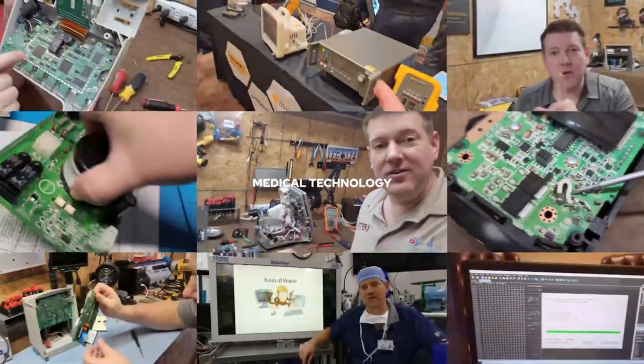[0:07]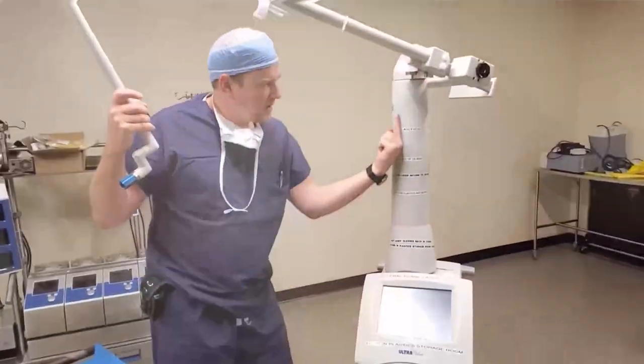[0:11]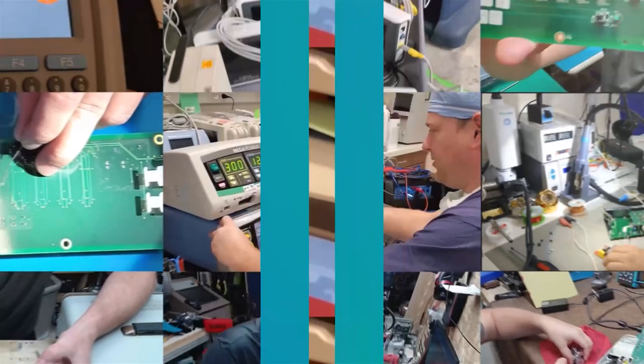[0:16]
If I seem like I'm a little more excited than usual, that's because I'm back in ORs. I'm back in ORs, guys, and you guys should know, I love ORs. I've been doing this for 20 years, 19 of which have been in ORs.
Today, I was brought in because I've got a light that has failed spectacularly, probably due to negligence, but I'm gonna swap out a light head. And you guys are here for the ride, okay? So let's go ahead and flip this around. I'll show you what I'm doing. That way I can document the process and maybe you guys will learn something about lights.
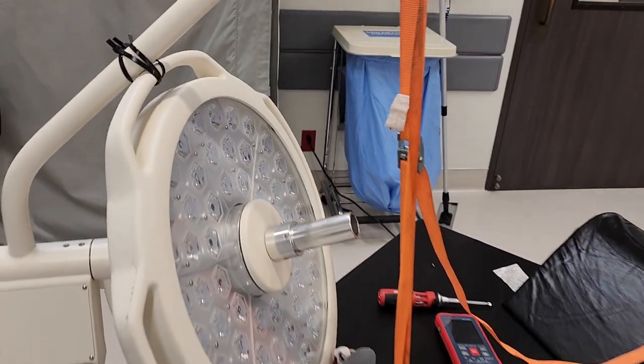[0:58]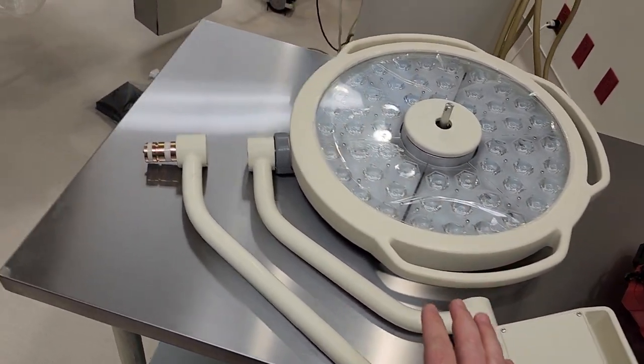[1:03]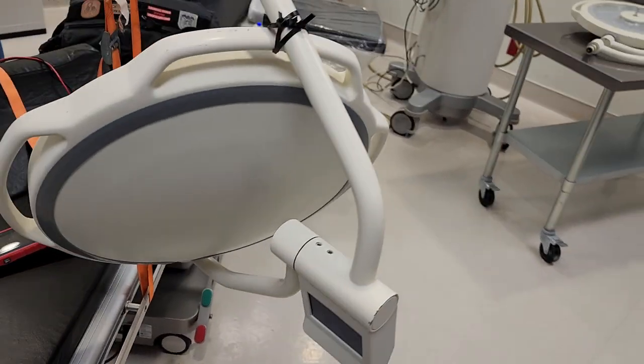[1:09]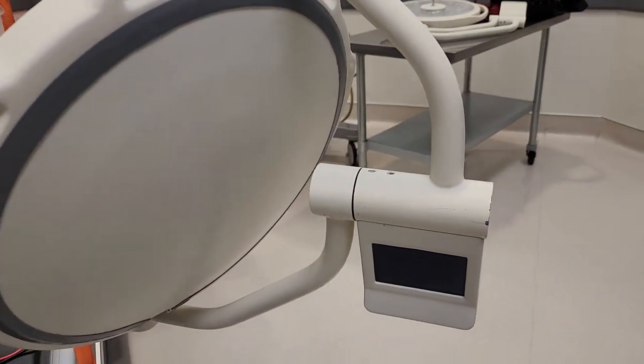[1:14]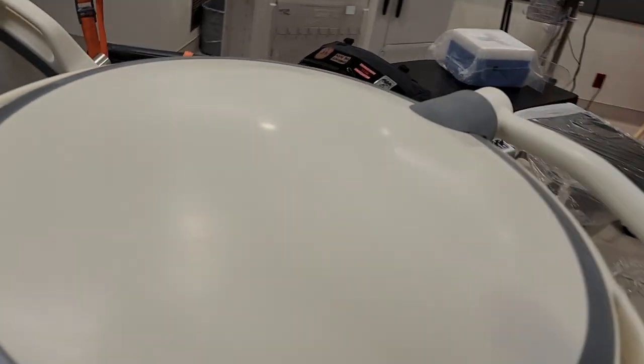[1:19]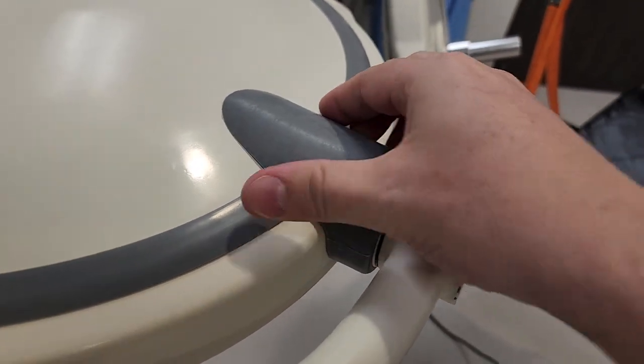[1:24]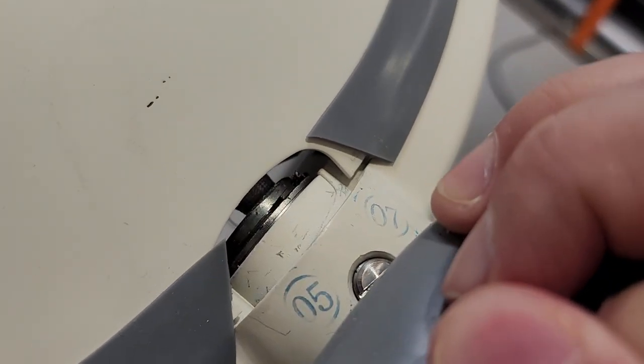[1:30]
All right, guys, here we go. So here is the replacement light head. This is a DRE, let's see, what series is it? The SLS 9000. That's right. Okay. So this is a DRE SLS 9000 and it broke right here at the knuckle. So right here, there's a rubber boot that normally protects it. And on the other light head, it broke right up here in this collar. And you can see on this one, it's absolutely fine.
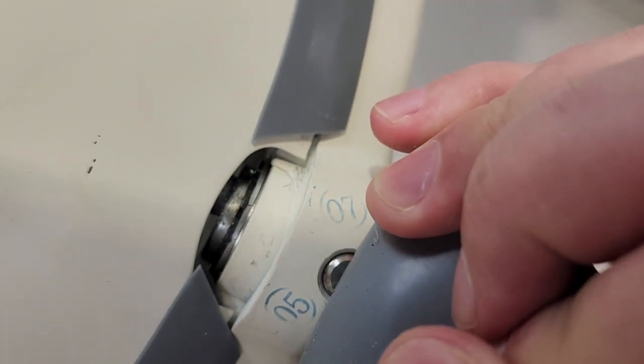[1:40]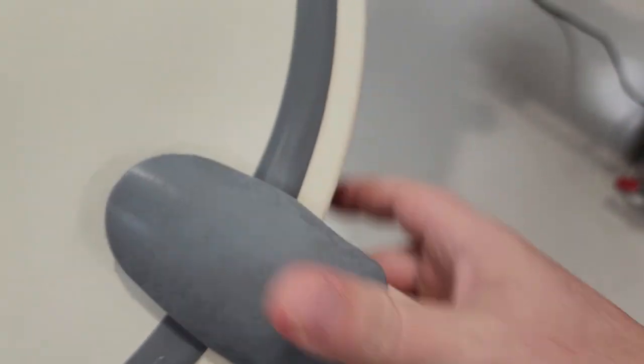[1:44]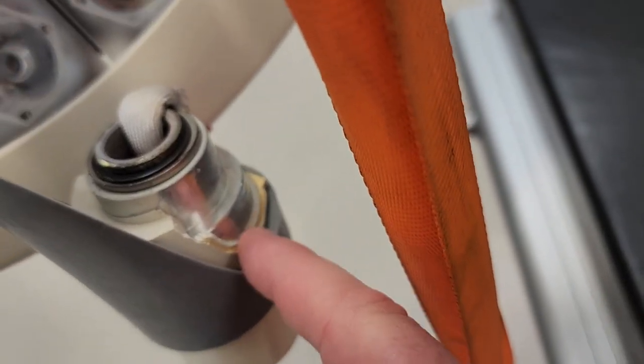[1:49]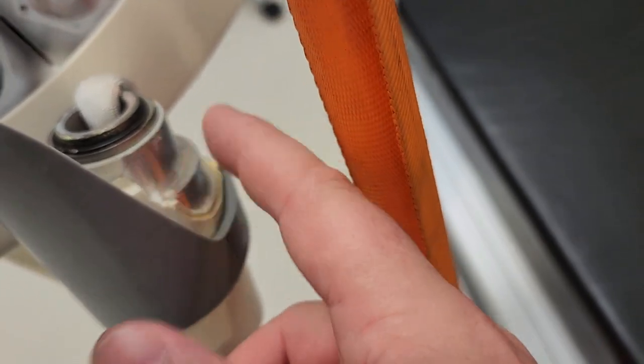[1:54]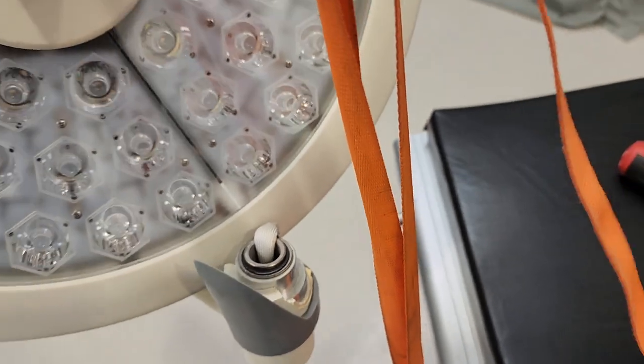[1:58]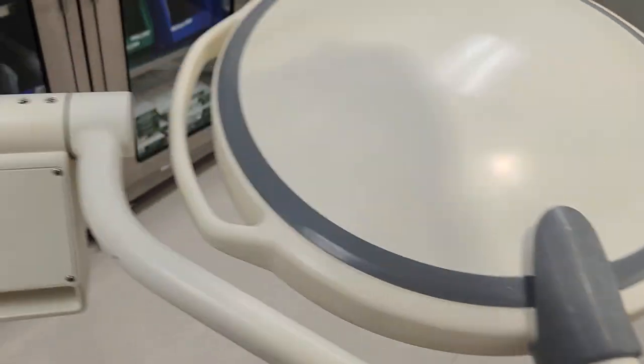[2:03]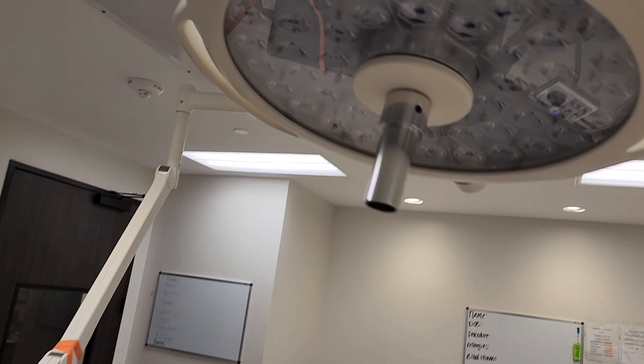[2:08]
Oh, sorry guys. So the other one, it broke right here in the casting. And let's see, it does look like it's multiple layers of polymer. Yeah, so it's got different layers of polymer underneath there. But anyway, you can see that is damaged. This is a two light head room. There you go. So I'm gonna swing one out of the way.
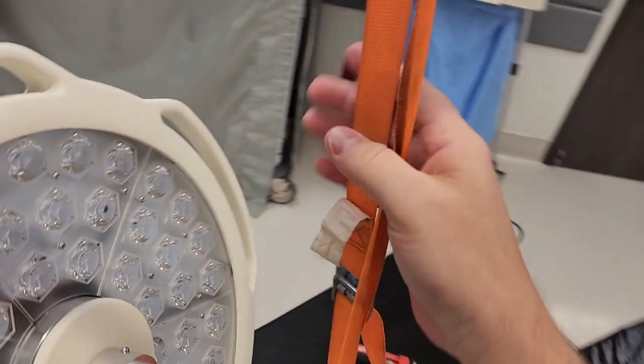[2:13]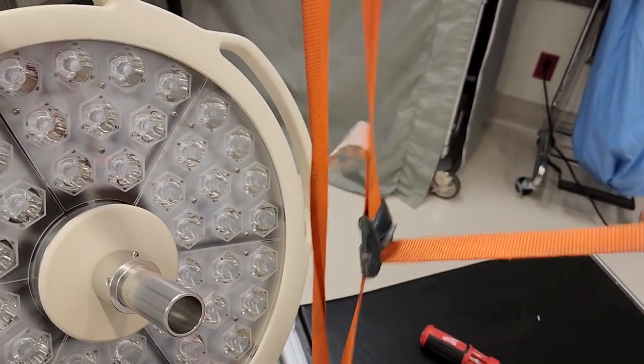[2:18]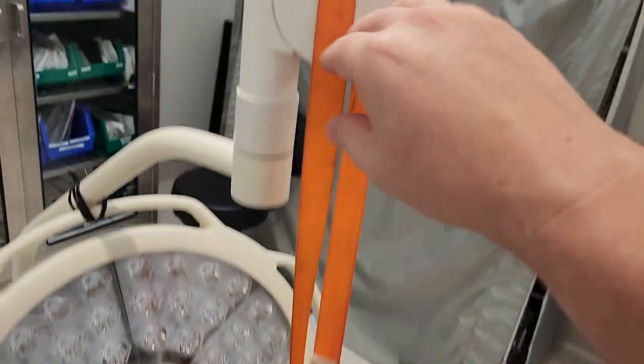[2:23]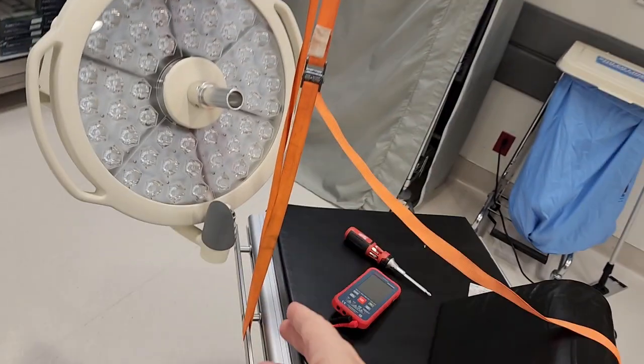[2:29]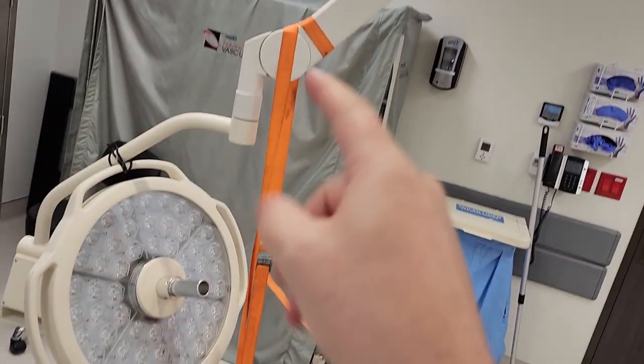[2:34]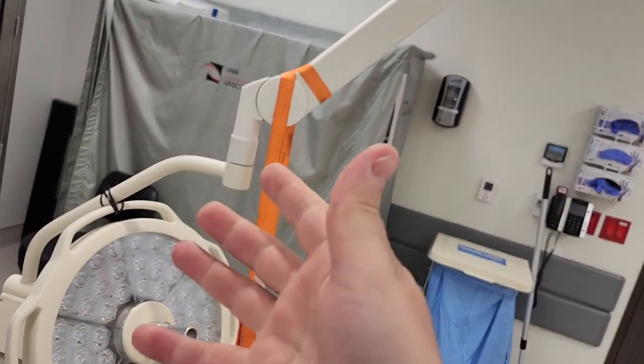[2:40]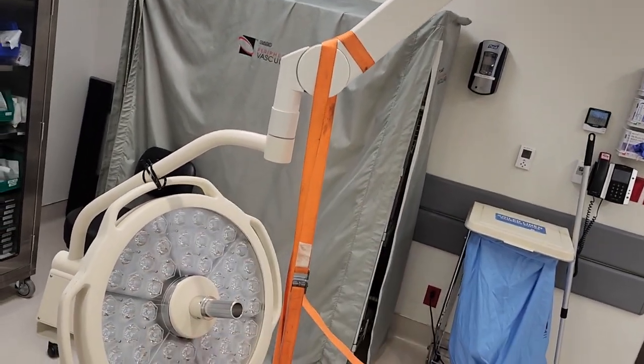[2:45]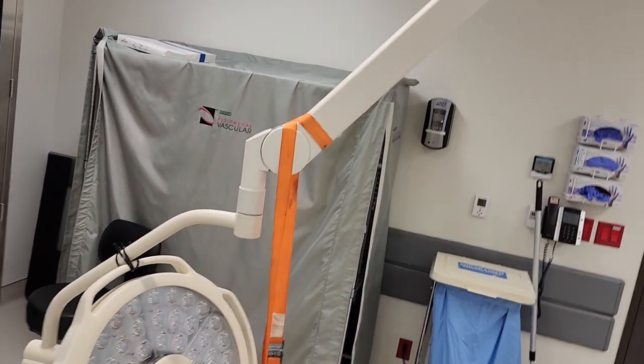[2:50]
So guys, I always keep this orange cable in my tool bag, and this orange cable, this tension tie, is because I use it often on surgical tables, but at the same time, I have almost broke my face because of surgical lights before. So as a precaution, whenever you're working around surgical lights, always tie them down. Even if it's just tightening something down or whatnot, I've had the light head almost fall off before because as you're inspecting it, I've actually found where these junctions are falling apart and I had the arm take off and almost took out my face.
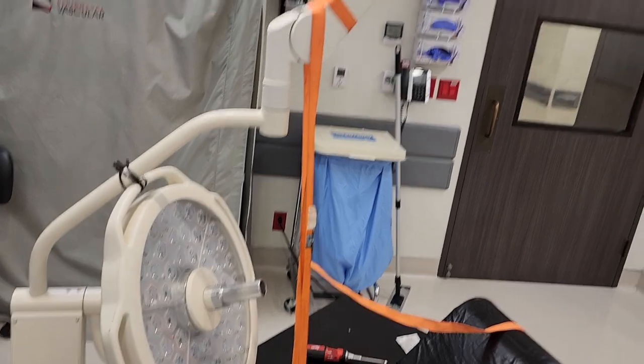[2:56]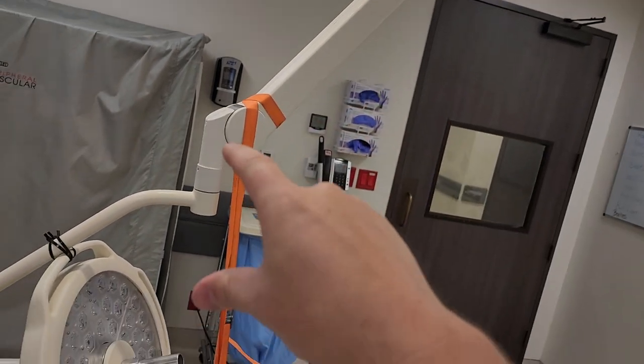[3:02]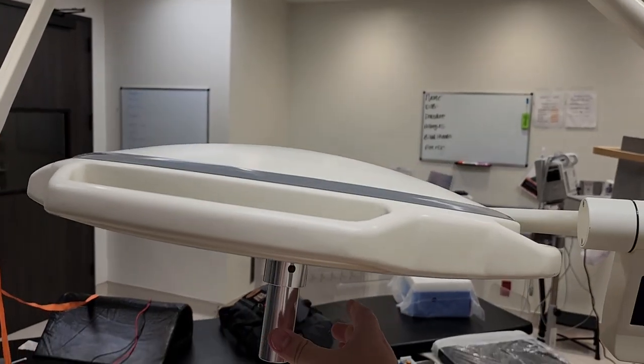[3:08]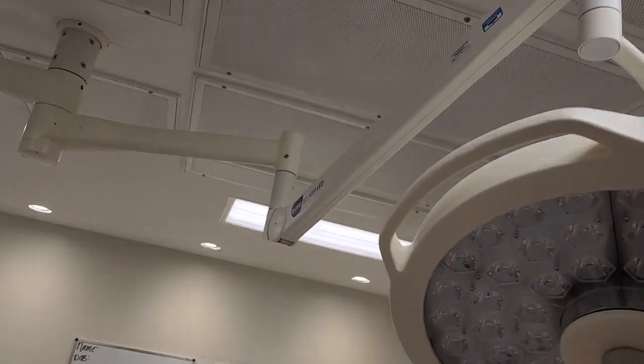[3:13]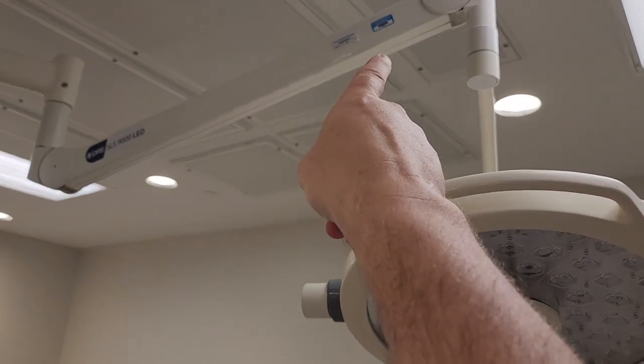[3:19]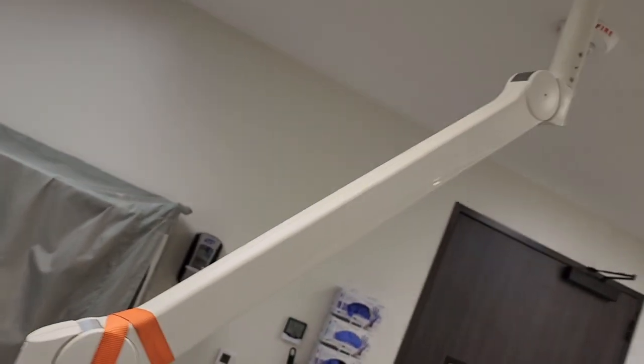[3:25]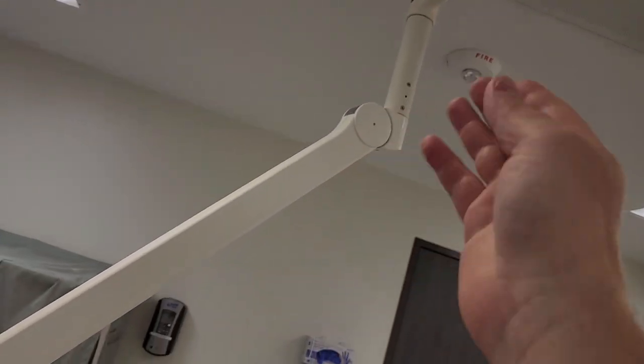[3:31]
So anyway, I have had that before, and it is a spring-loaded arm, which means up in here, there's a tension spring, and it is balanced accordingly, so that when you position a light anywhere in the field, the spring arm is compensating so that it doesn't drift down. And if your light drifts down, then you have to adjust it. There is a way to adjust all these spring arms. And you know, there's only a couple manufacturers of these arms. So I think Ondal is one of the main manufacturers of these arms. So they're all very similar.
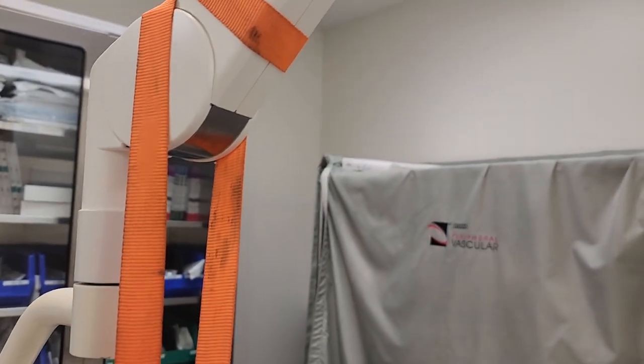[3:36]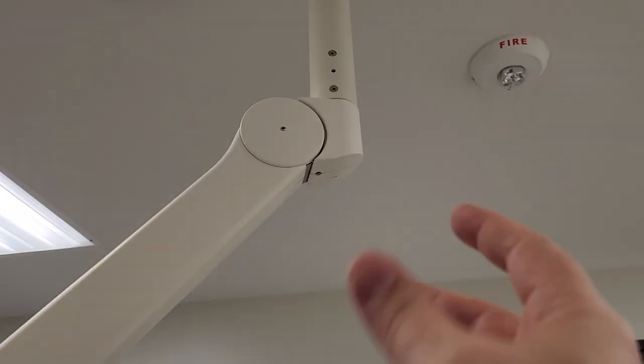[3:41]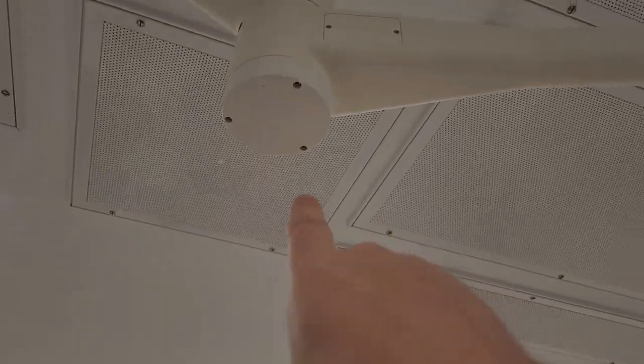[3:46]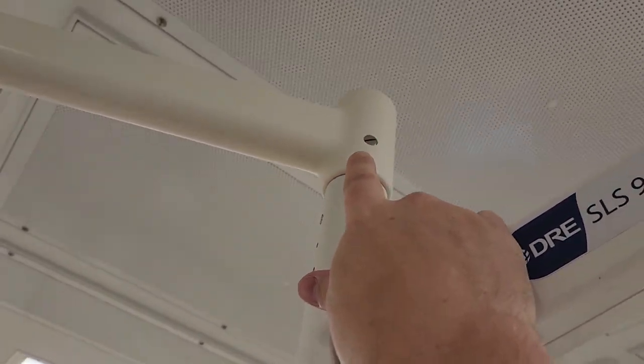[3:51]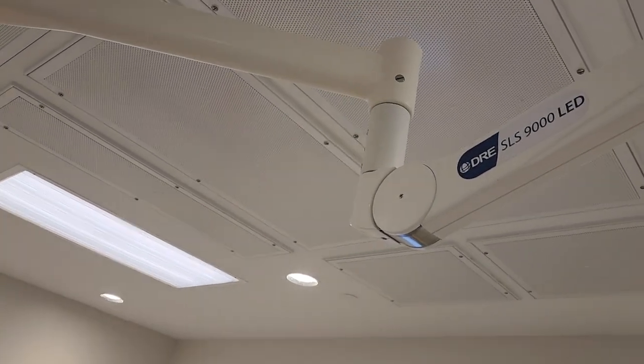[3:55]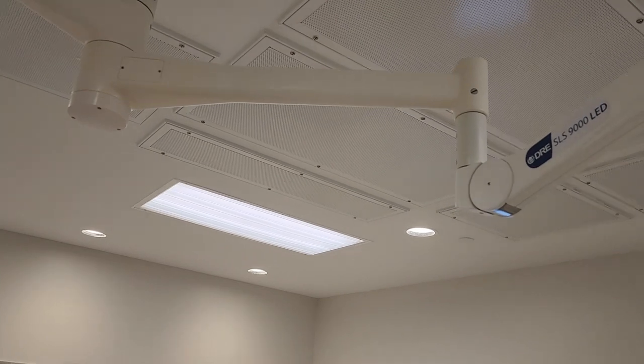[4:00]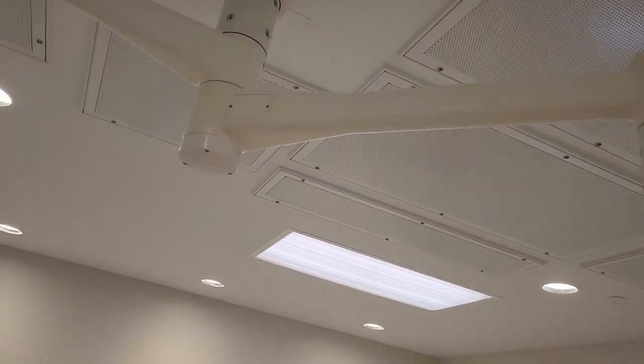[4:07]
Other things to check, you can see right here, I've got my guard plates, my corner pieces are on, my bump cap down here at the bottom is working. There's other things that you should check, like up there, those large flatheads. Those are tensioners for drift, for side-to-side drift. Actually, look at this light right here. In this direction here, it wants to drift a little bit. So, let go, and yeah, see, it does drift a little bit. Not too bad, though. So that would be an adjustment up here.
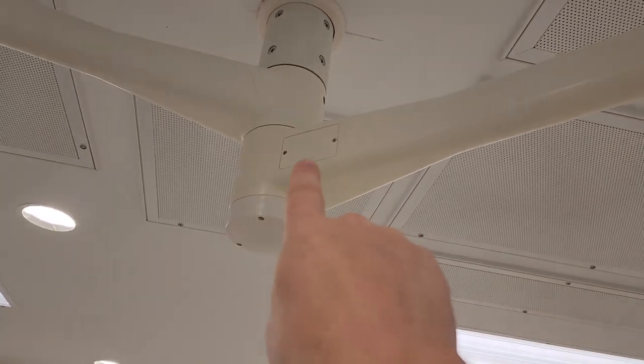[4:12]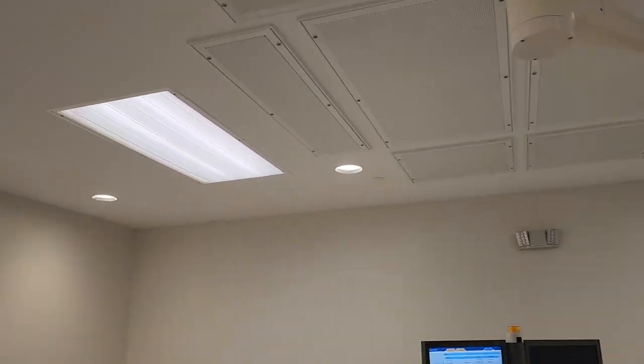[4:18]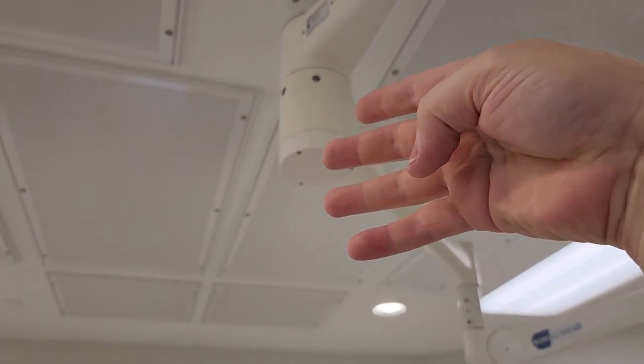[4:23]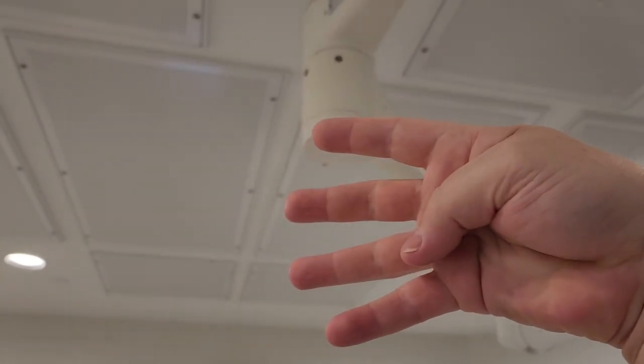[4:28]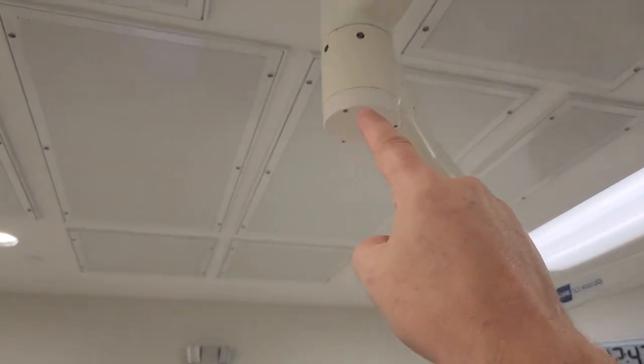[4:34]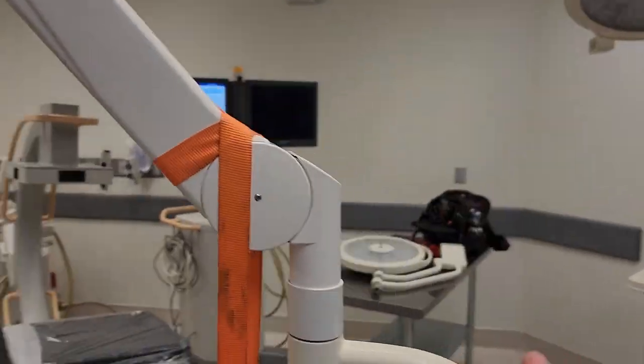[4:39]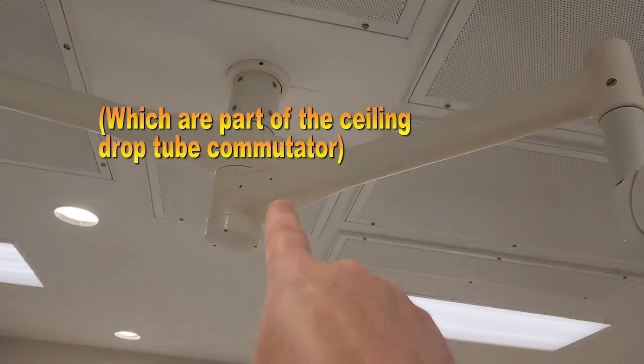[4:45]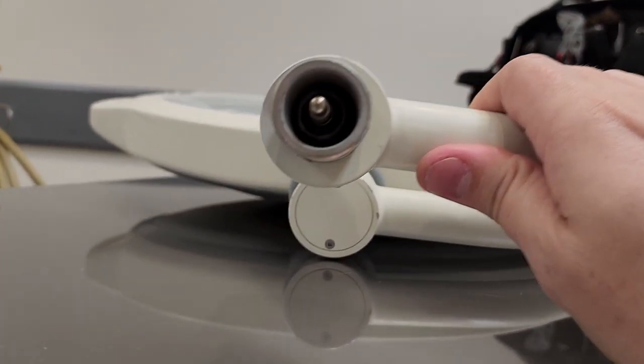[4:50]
And you can see also, right there, that would be a brush access cover, because these lights do not have wires that go all the way down. What it does is it has on the column, there are some contacts, and then right there, there's some brushes, and the brushes will rest on the contact. So you can rotate it all the way around, and those brushes will guide it and keep the electrical continuity. So with lights, you either have commutators or you have brushes. So brushes are usually on the drop tube. The commutators are usually what you find in the knuckles.
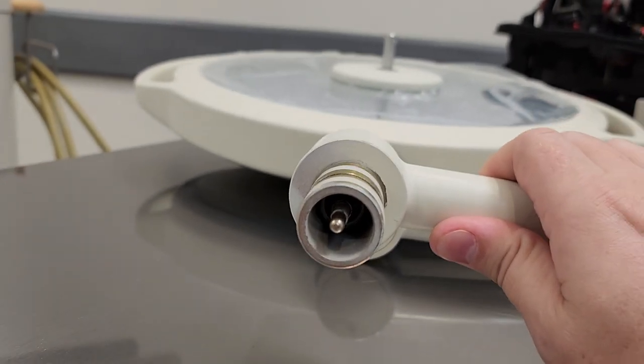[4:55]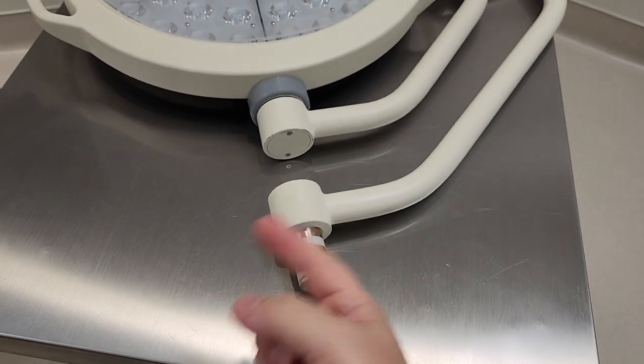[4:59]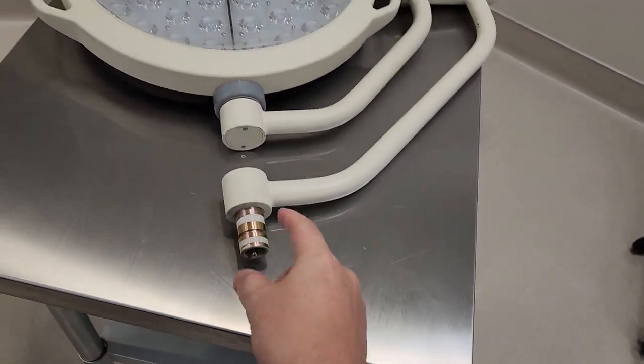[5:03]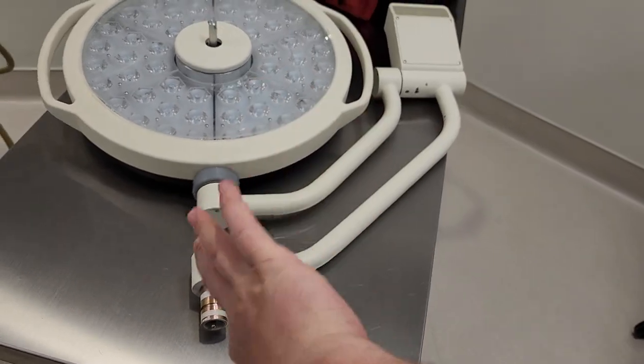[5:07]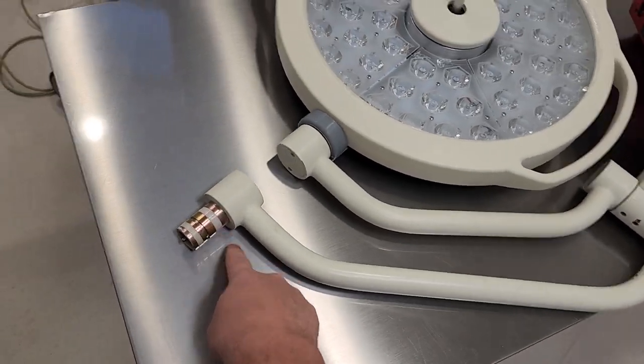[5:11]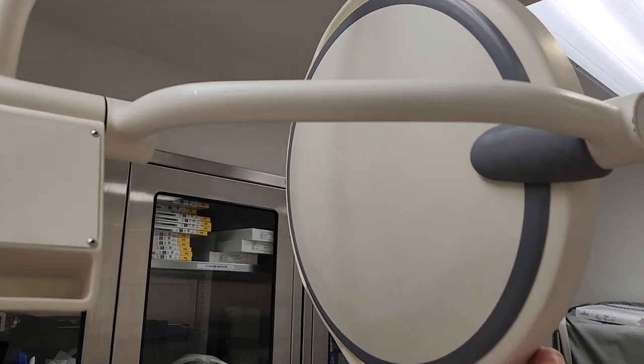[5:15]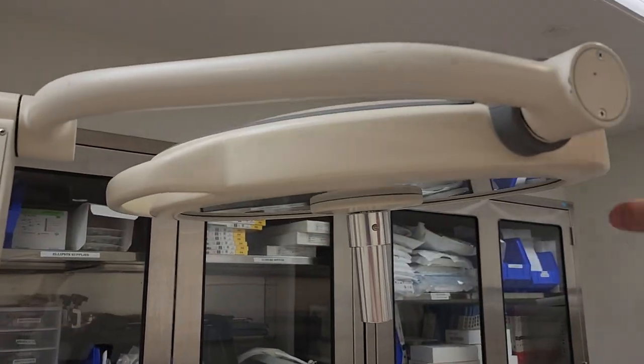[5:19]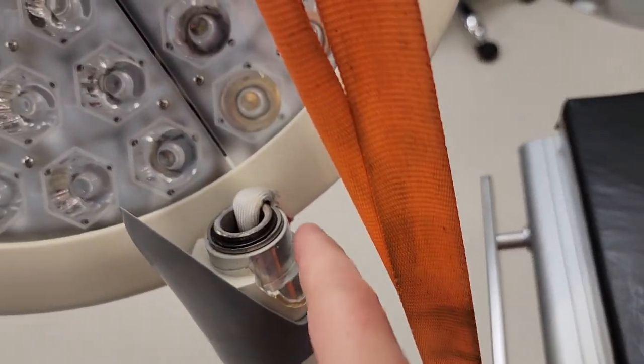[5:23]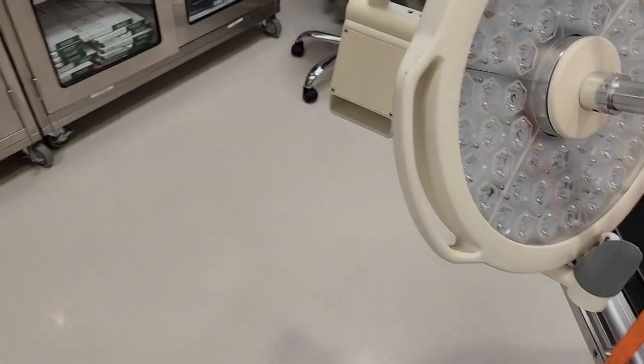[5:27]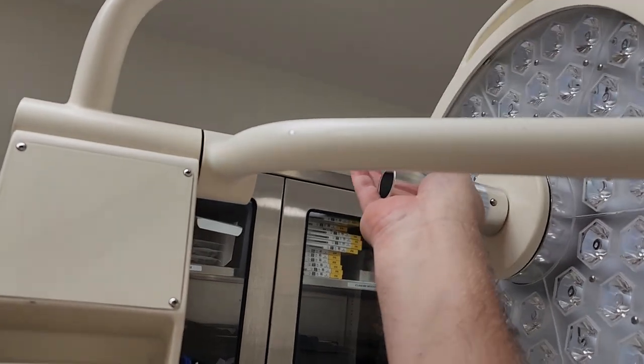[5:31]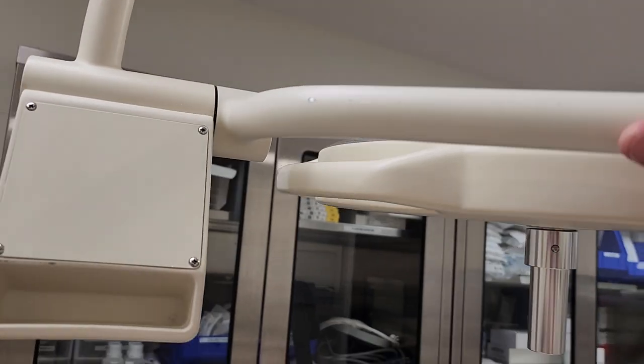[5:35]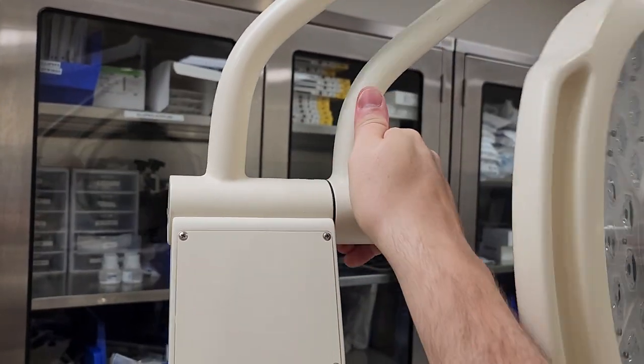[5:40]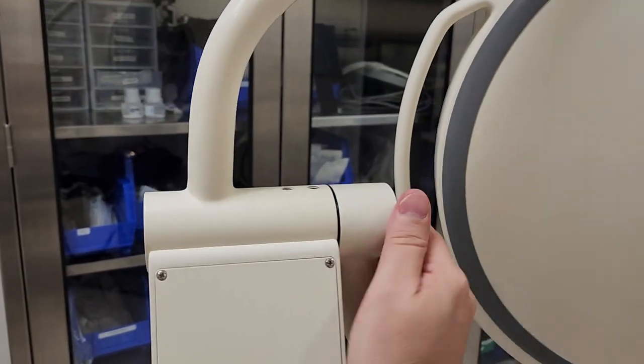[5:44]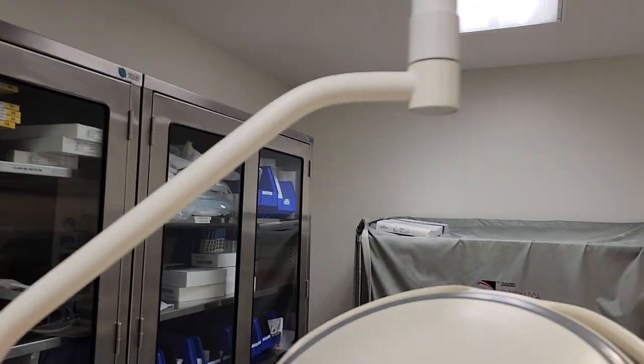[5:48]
So right here you can see a version of a commutator, and what that allows is you to rotate it and you can continue to rotate it. Without that, you'd have to have bump stops, which means you rotate it a certain degrees and then it will hit a bump, and you rotate it back and it hits a bump. So a lot of manufacturers move to commutators. So let's see. Yep, there's a bump stop. And there's a bump stop. The reason we have bump stops in the light head is because some of the functionality is actually through wires. Actually, all the functionality is through wires. So on these particular ones, there is a bump stop, and it's something that should be checked during PMs. So not only drift, but you're also gonna check the bump stop. Yep, there's one. There's the other, okay. Now this knuckle right here.
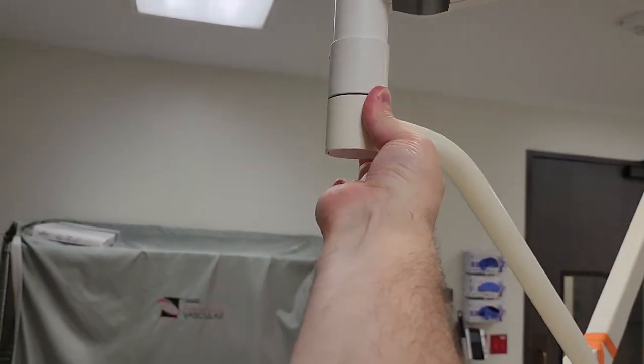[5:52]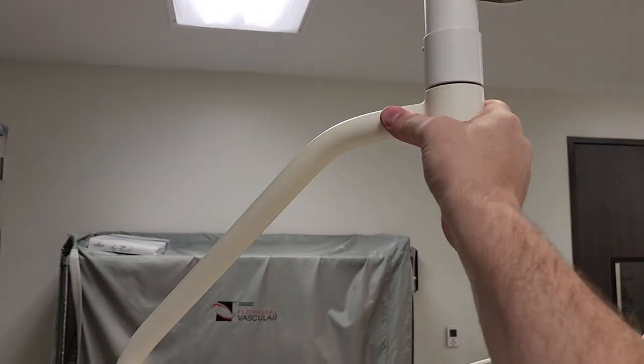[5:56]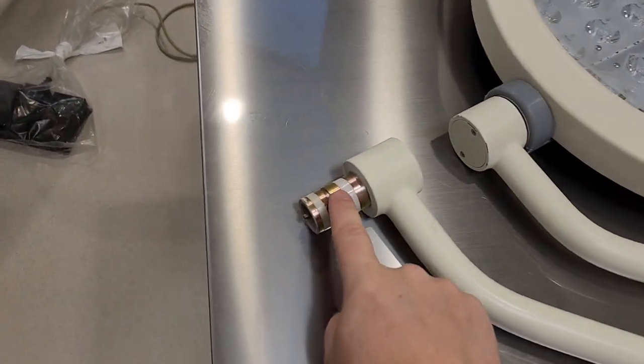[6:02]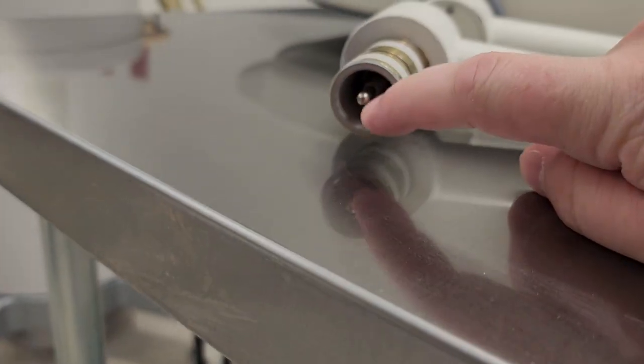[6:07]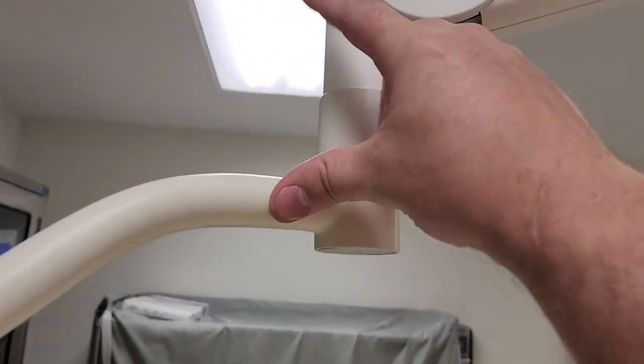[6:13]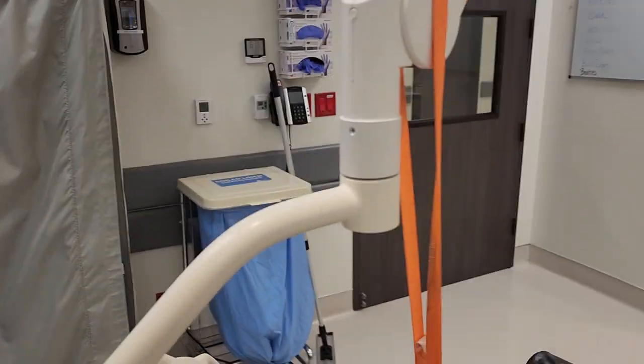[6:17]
So notice it goes all the way around. No bump stop. That's because this knuckle right here is the commutator, right? So what's going on is your electrical contacts are in here and they will rotate 360 degrees, and that is done through this knuckle. Now that you know that, now you know what we're going to do to change out this light head.
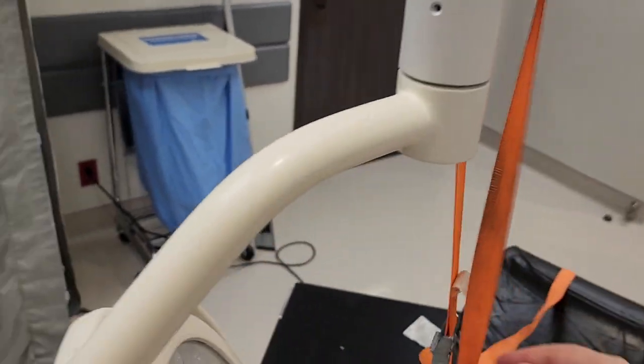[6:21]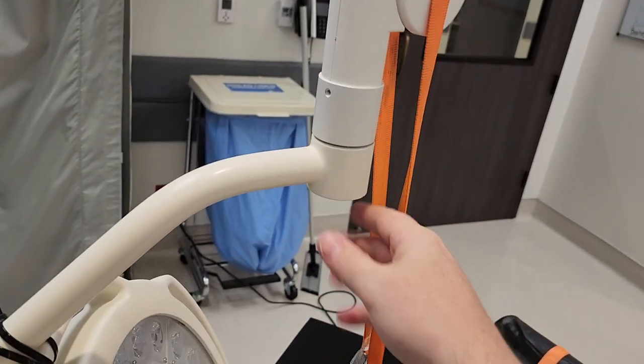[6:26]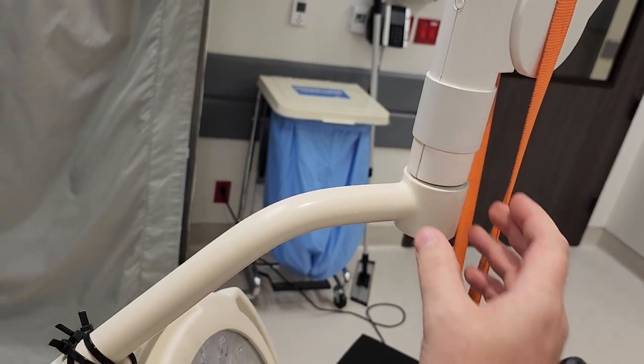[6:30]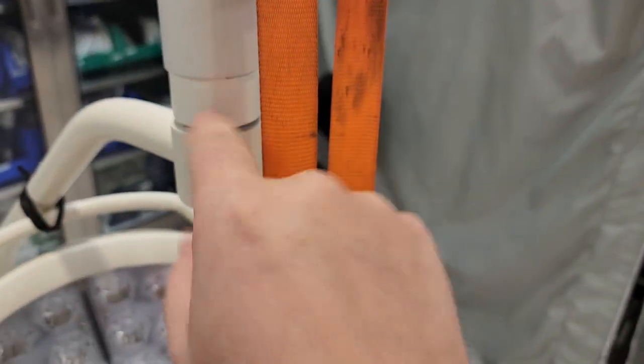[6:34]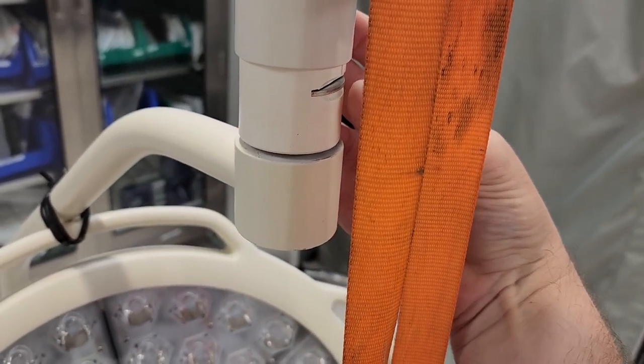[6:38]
So first thing, my tension strap, it's tensioned down almost as far as it'll go. There's a tiny little Phillips screw in this one. Take that little screw out and it raises the cover. And now you see almost like a Woodruff key right here. There's a key there that's holding the light head on.
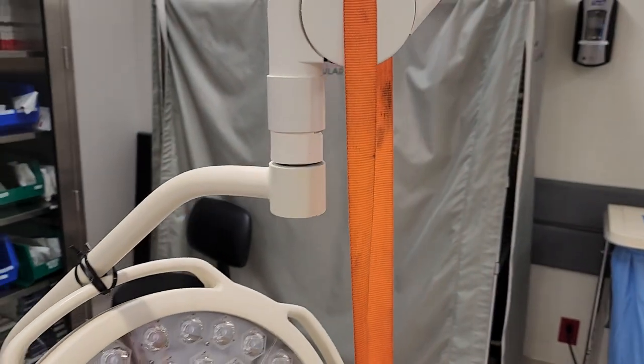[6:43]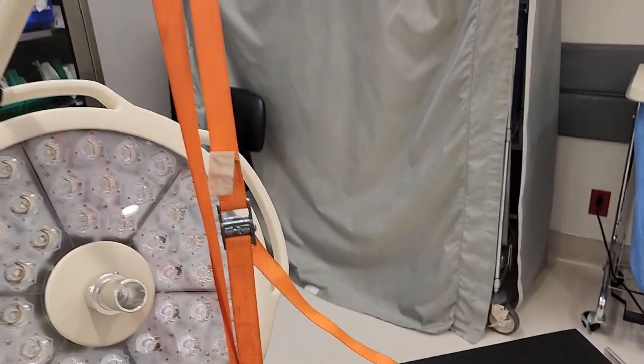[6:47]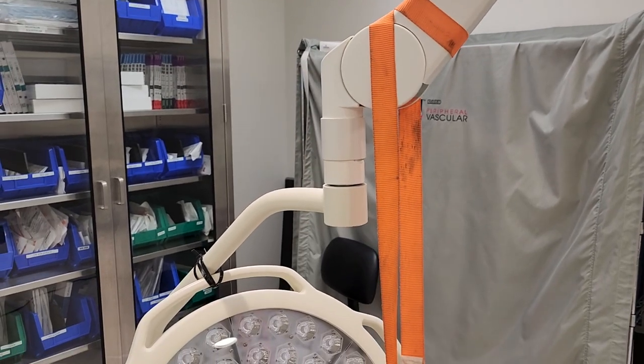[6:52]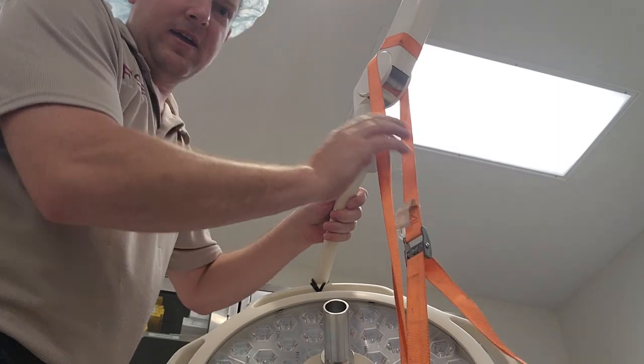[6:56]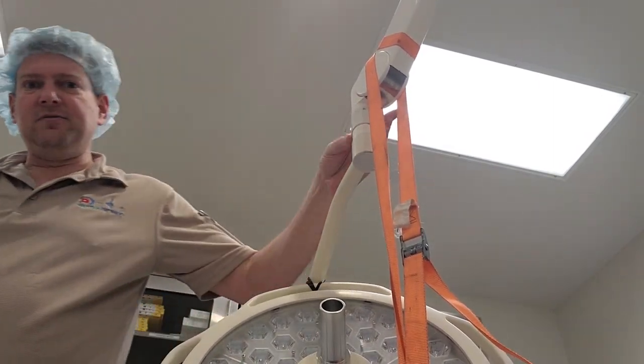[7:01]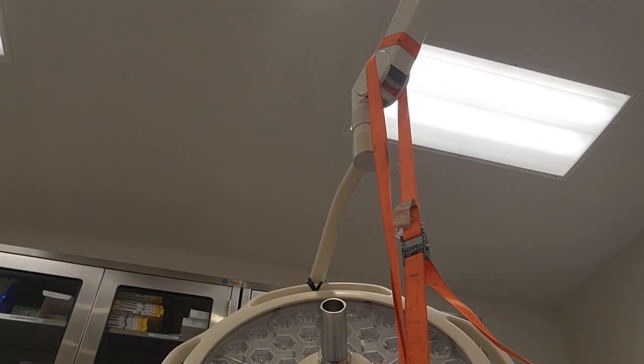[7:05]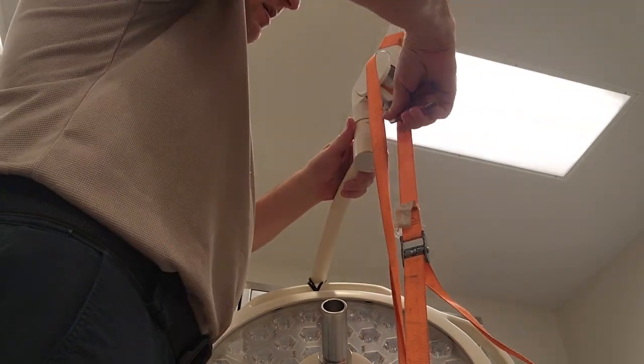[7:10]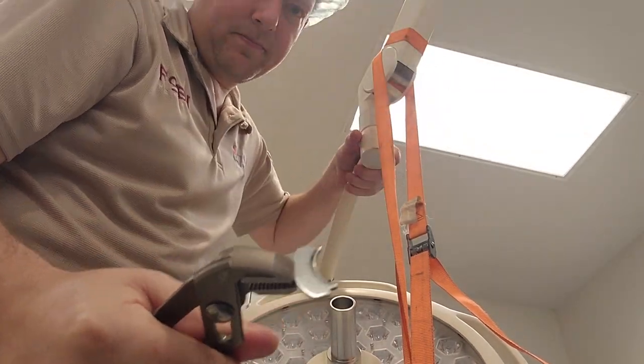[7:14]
So let me position the phone so I can pull that out and you guys can see what it looks like to pull a light head. And we'll go ahead and put the new one on. Okay, so right here is my key. And here is my cover. Now usually I do this with needle nose, but on this particular one, I'm gonna, oh, there it is. Okay, so that's what the key looks like.
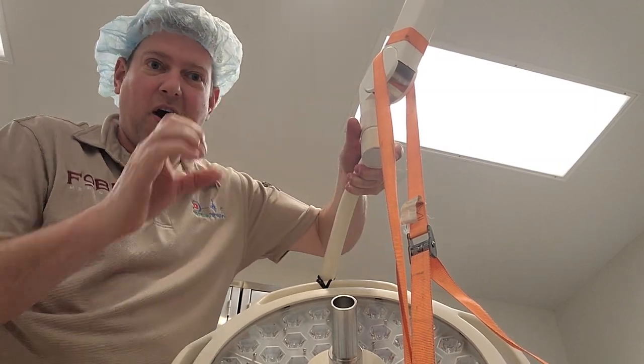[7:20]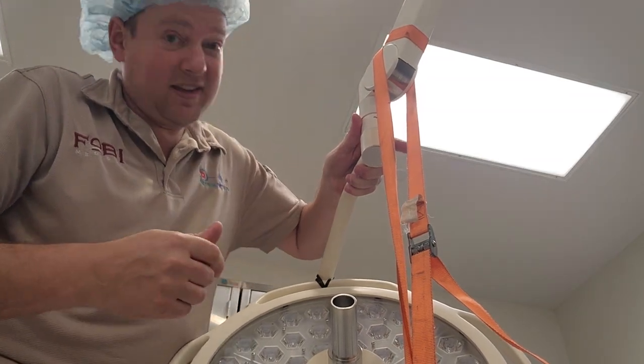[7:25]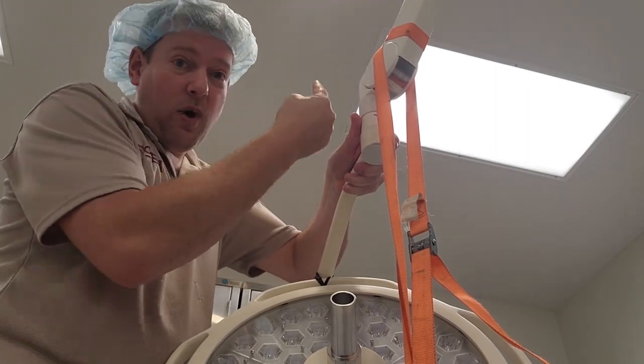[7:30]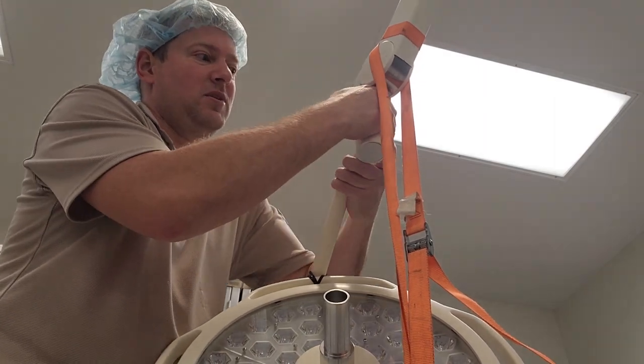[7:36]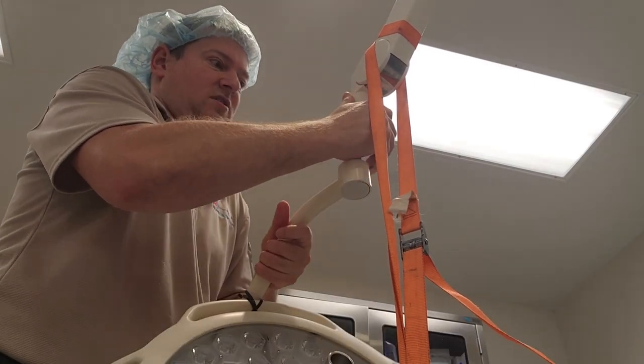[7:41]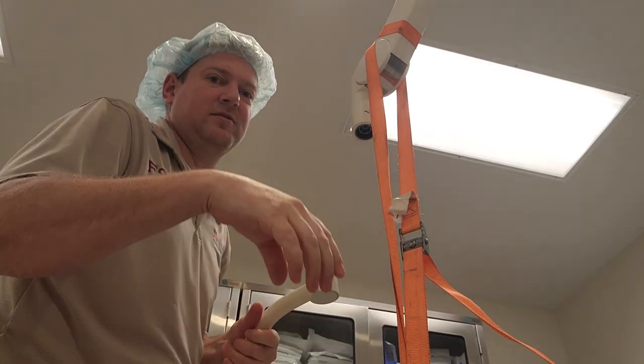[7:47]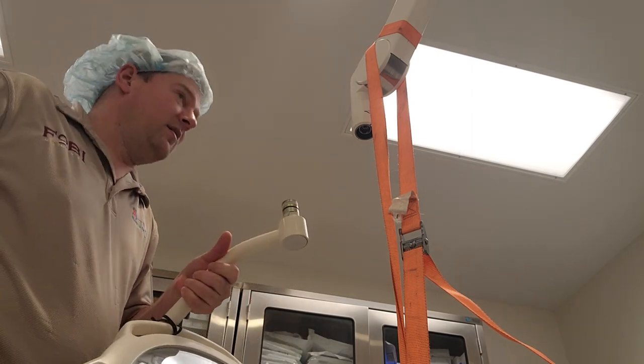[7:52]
Now notice I'm holding on to the light head. There is nothing that is holding it on other than tension from the socket and the electrical contacts. That's pretty much it at this point. So this is where you have to be careful because the arm wants to go up usually, except I got mine tensioned and the light wants to drop. So what we do is we grab onto it, kind of give it a rotation, just like that. Mind you, keep this sleeve in the correct orientation because when we put the new light head on, it's got to go on first. So that's your light head, right there. There it is. So I'm going to go ahead and place this one off to the side.
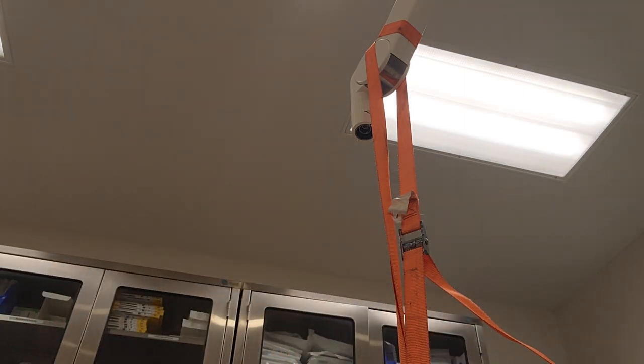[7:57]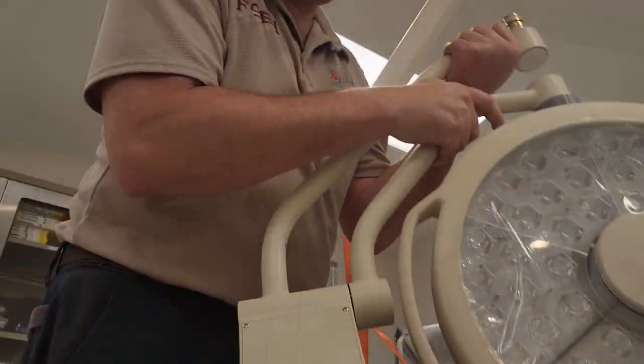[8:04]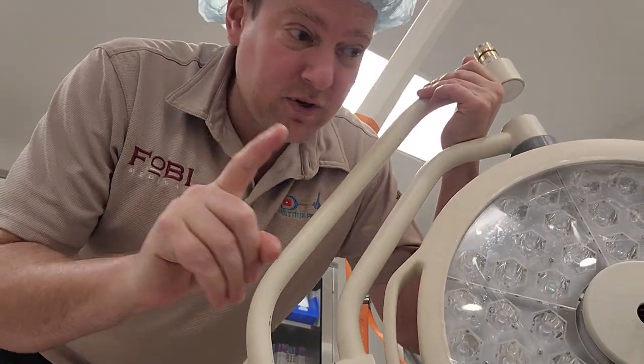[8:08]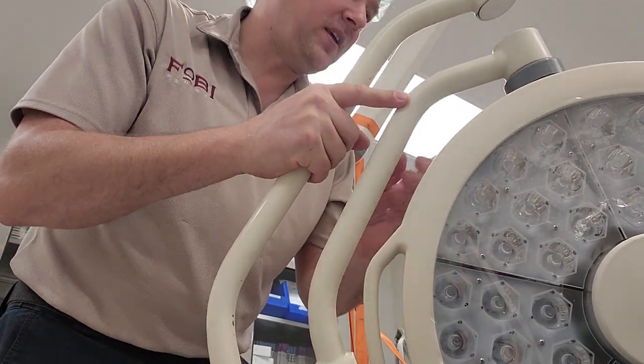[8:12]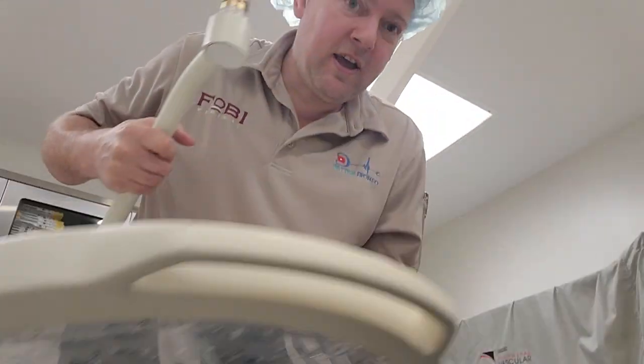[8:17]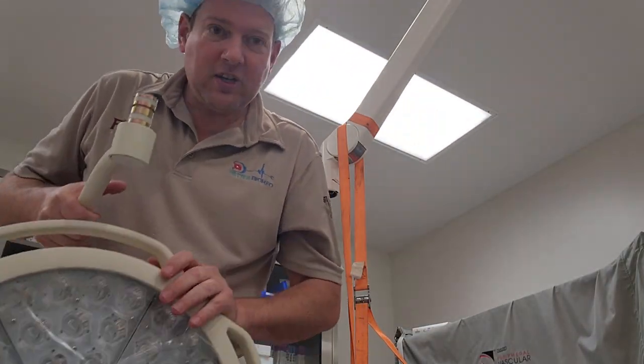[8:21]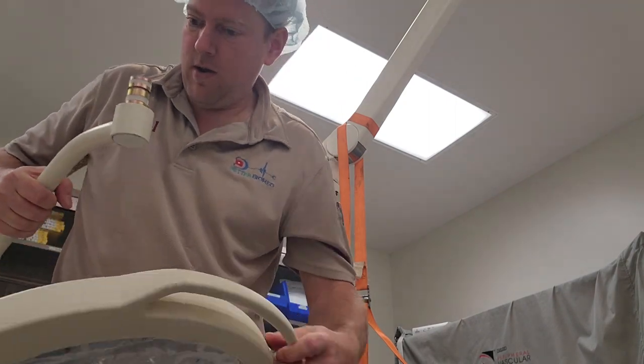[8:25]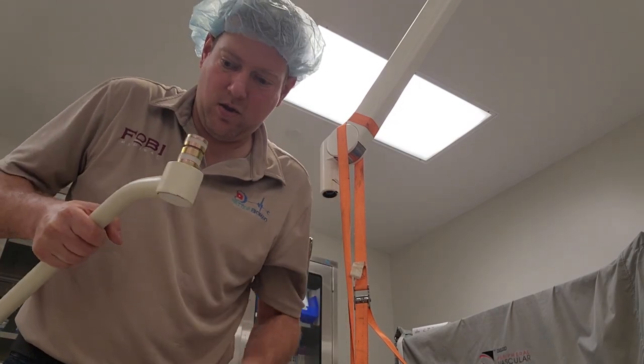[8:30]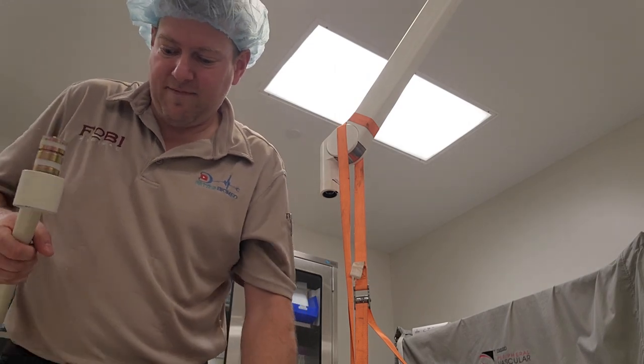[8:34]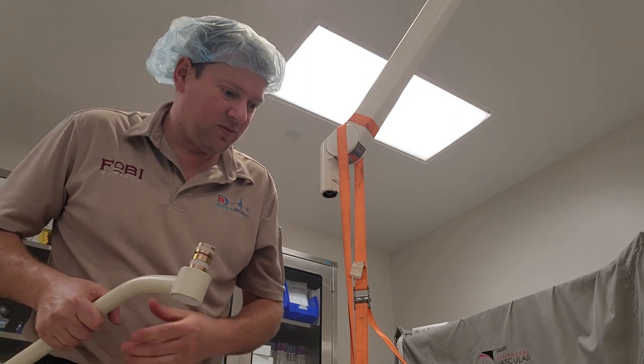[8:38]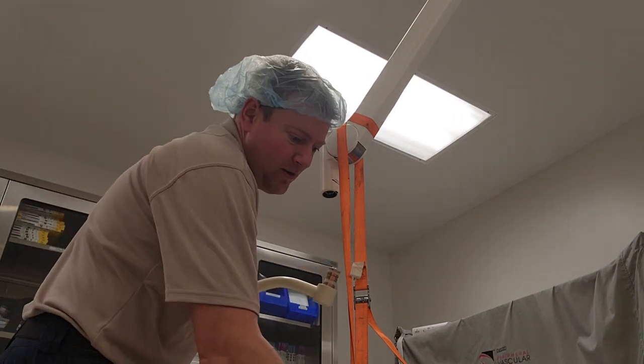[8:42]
And let's go ahead and get the new light head. On the new light head, there's some things that we have to check first. One of them is you want to check for visual damage because if it's damaged, we're not going to install it. The other thing that we've got to check is to make sure the bump stops are working, because if the bump stops are broke, that means the wiring might be broke. So I'm going to check it. It's good. Check the next rotation axis. It's good. Okay, so this part here, I figured this part was going to be good, but we always test before we install because once you install, there's usually no going back.
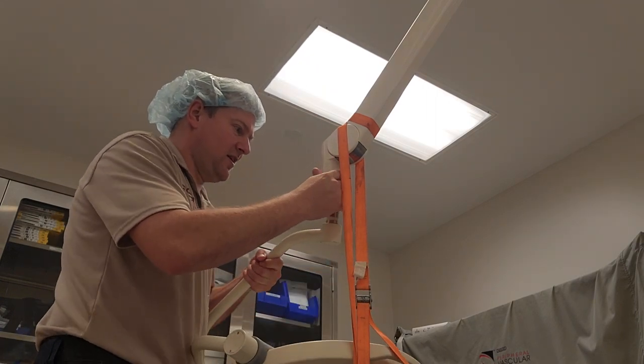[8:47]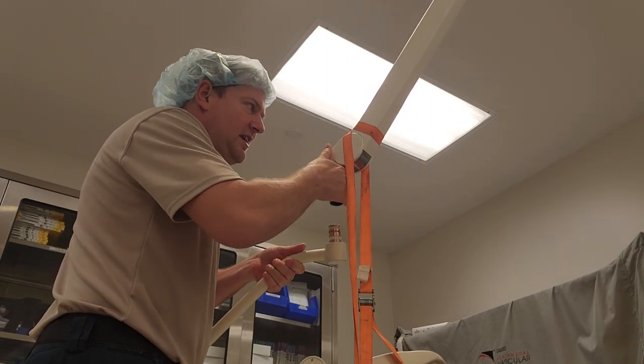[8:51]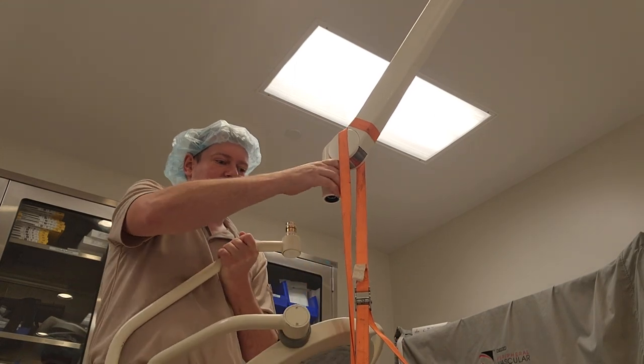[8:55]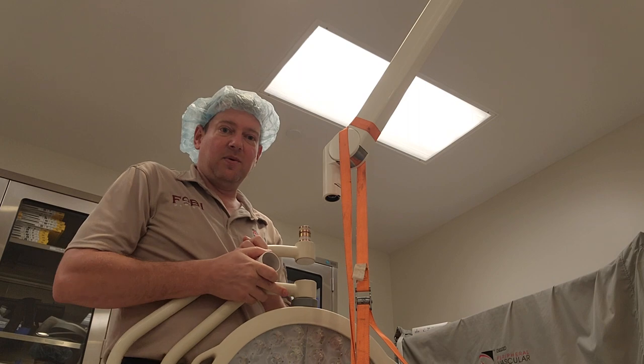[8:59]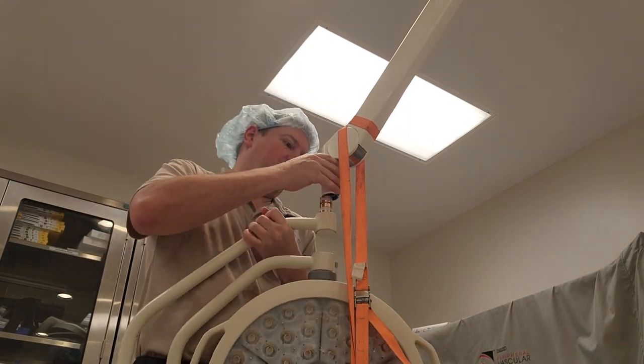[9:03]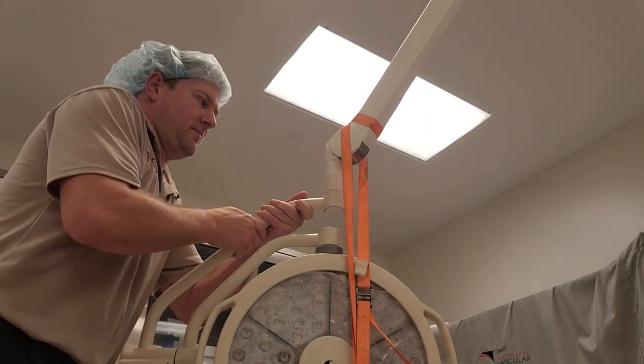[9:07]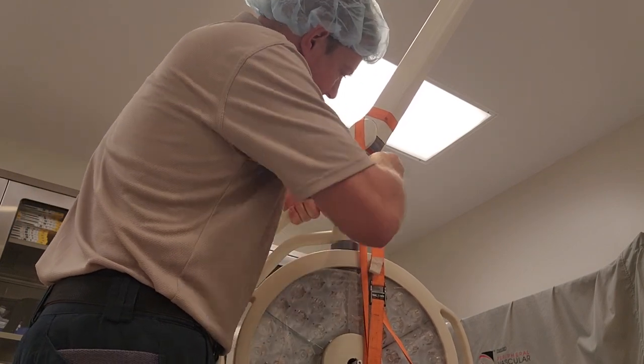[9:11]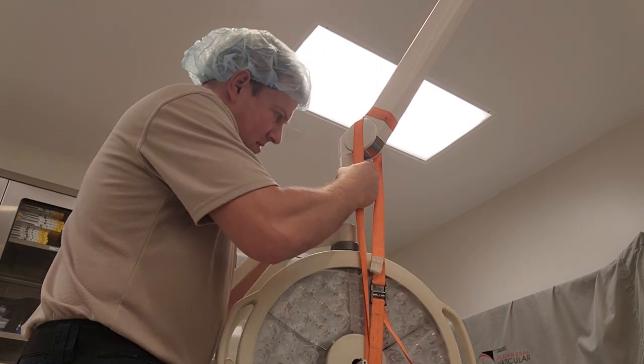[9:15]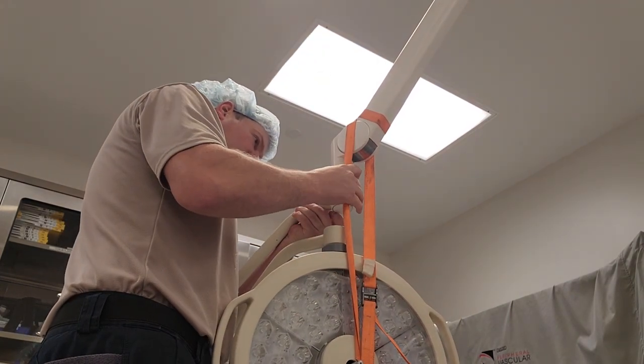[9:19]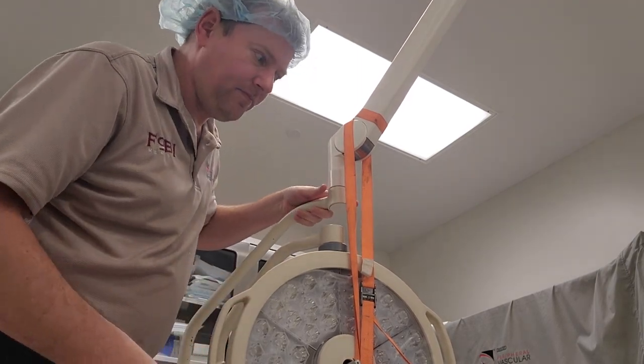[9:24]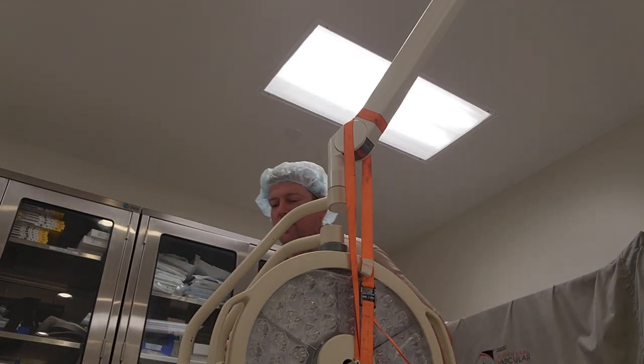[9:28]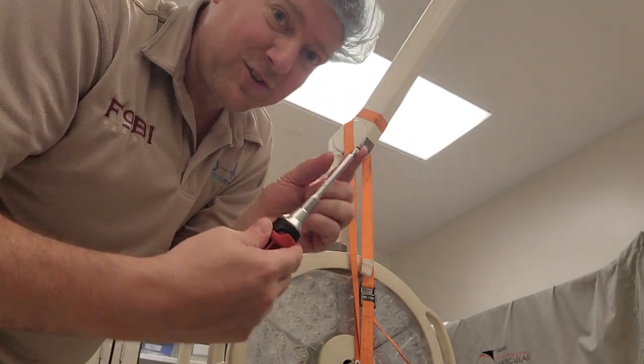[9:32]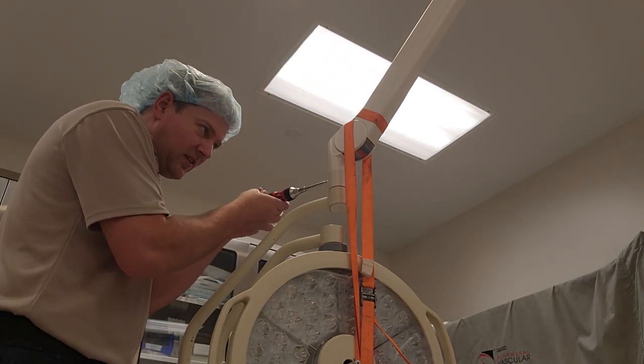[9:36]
So now we got the sleeve that sits on it. Now this has to go up into the socket, nice and even. And this is often a little bit of a challenge. There we go. I'm gonna install it sideways like this because it's a lever. It wants to go in unevenly. So there we go, up into the socket. We have the key, raise it up. We are going to drive in the key. That is it. Once the key's in, and we drop it back down, install the little Phillips screw. This is extremely important, considering this tiny little screw technically keeps the light head from falling.
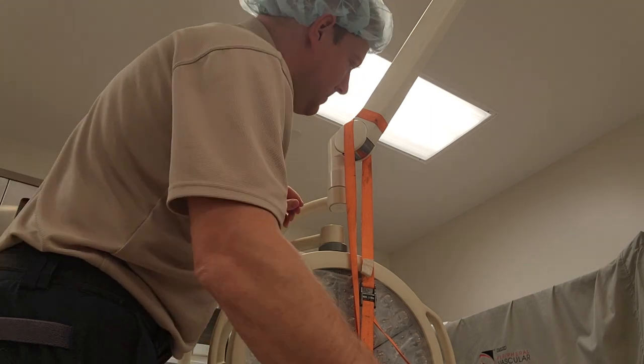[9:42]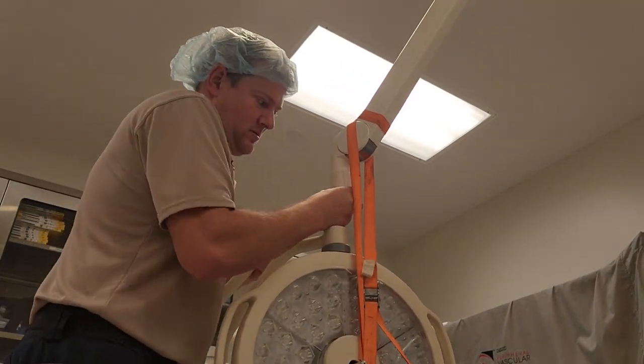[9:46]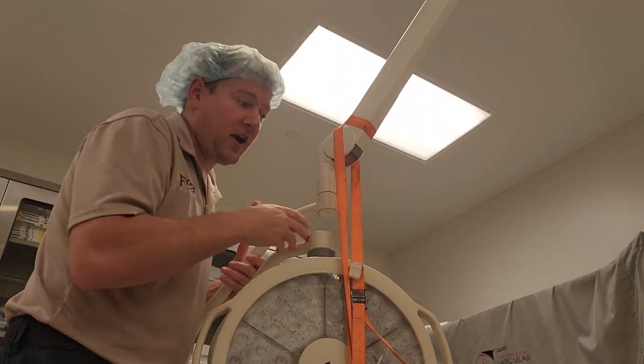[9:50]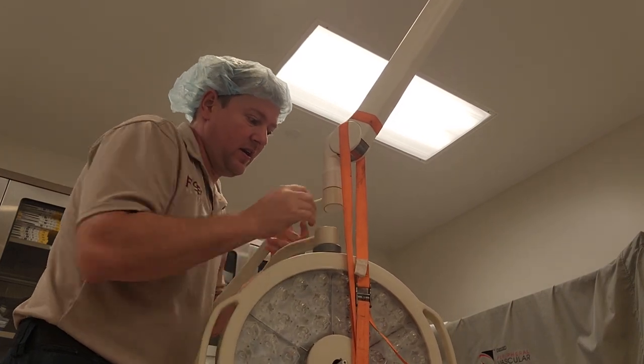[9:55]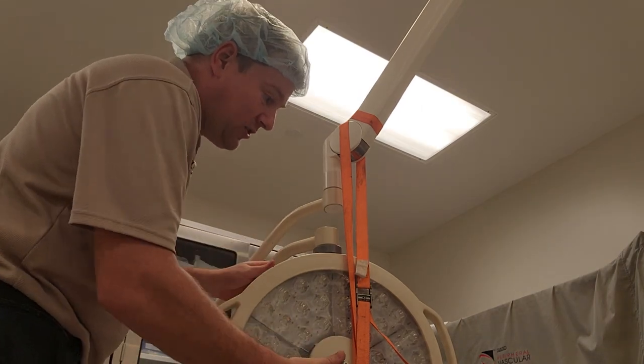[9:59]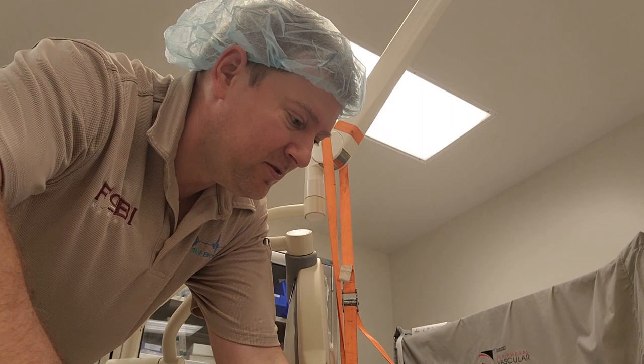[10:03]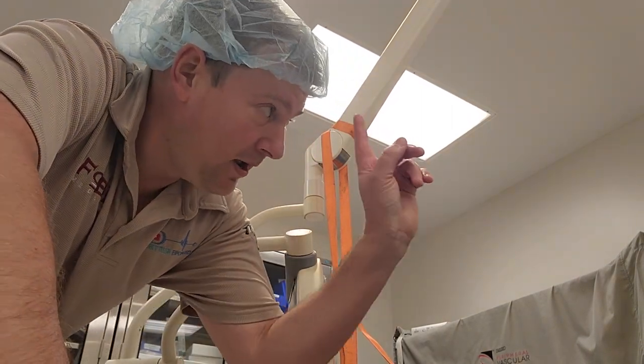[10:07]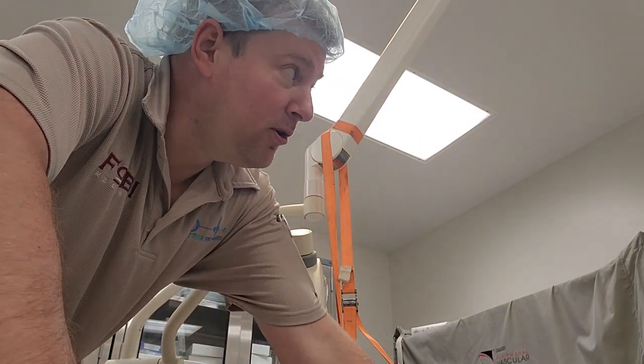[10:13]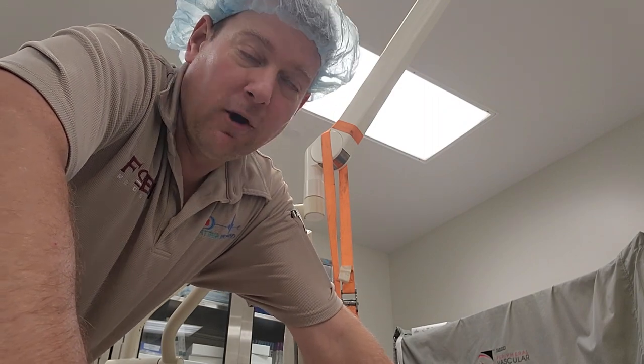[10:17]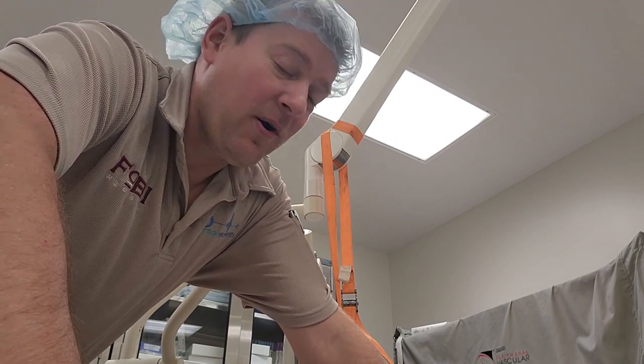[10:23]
Hand tension. Okay. And here, I'm kind of pulling down on it and I'm moving it, right? So I want to check it to make sure, just to be sure. All right, so one of the things I didn't tell you guys is before I obviously did this, first thing I did is I locked out the breaker, which is here in the room. You can remove, especially LED lights, with a live circuit. It's low voltage, it'll be fine. But standard electrical practice is always disconnect the breaker.
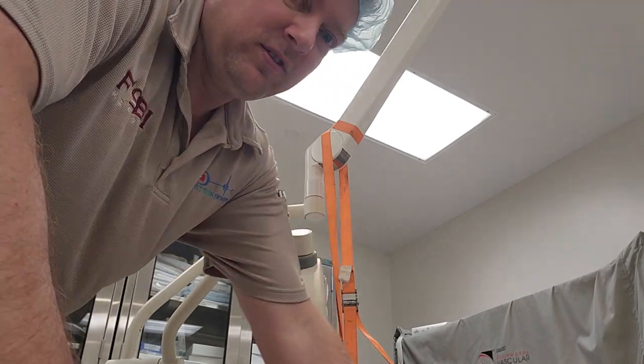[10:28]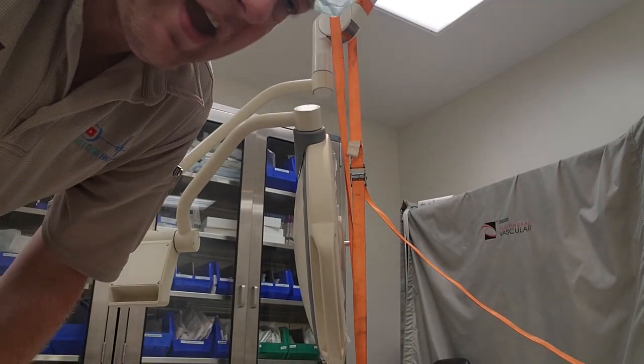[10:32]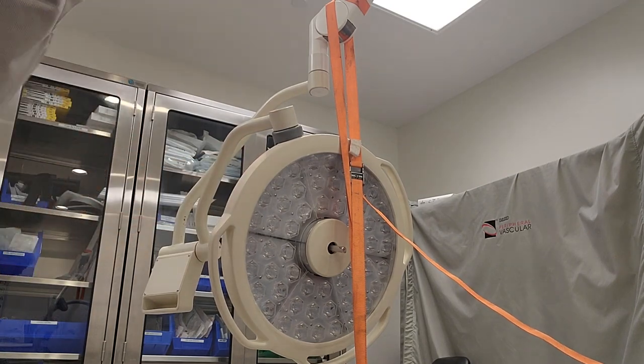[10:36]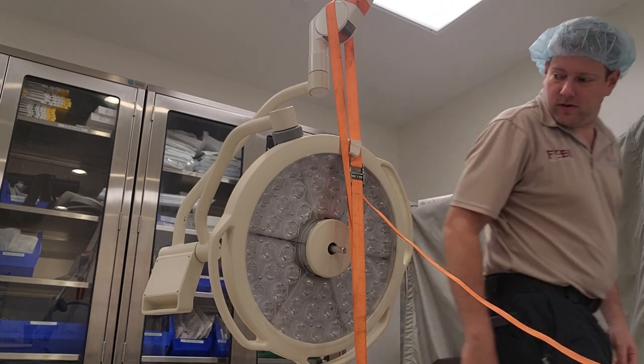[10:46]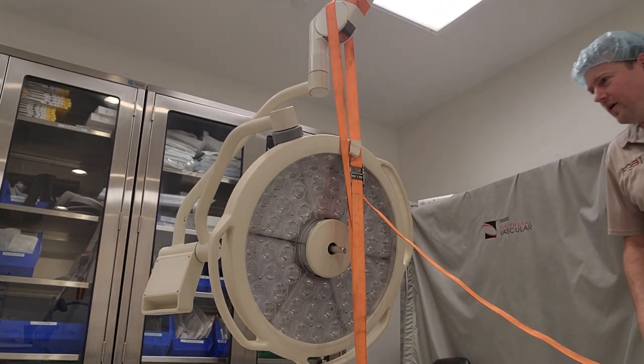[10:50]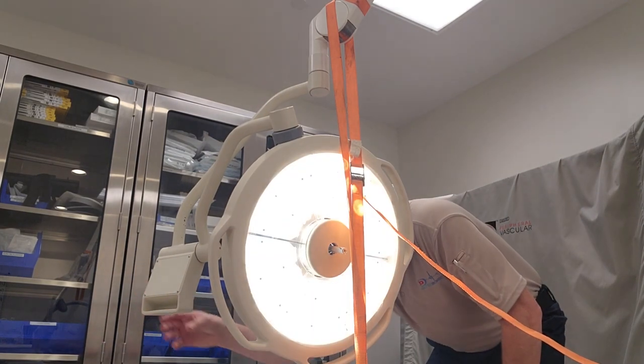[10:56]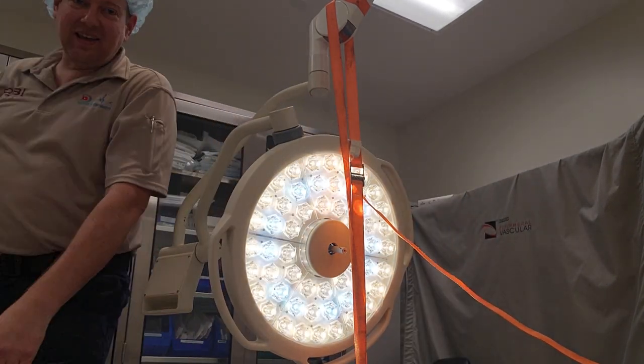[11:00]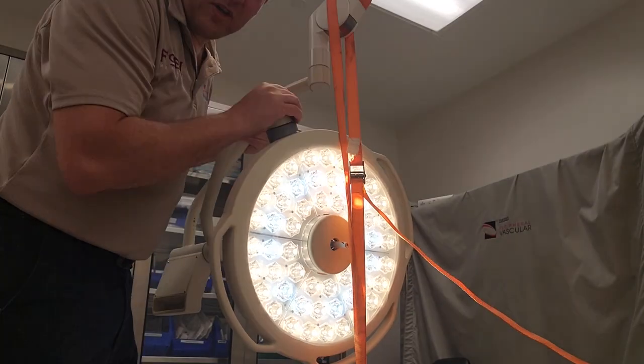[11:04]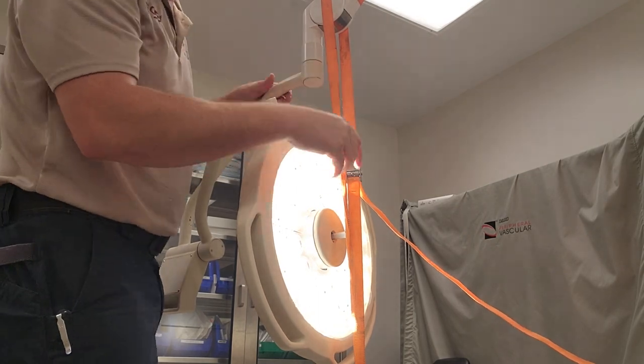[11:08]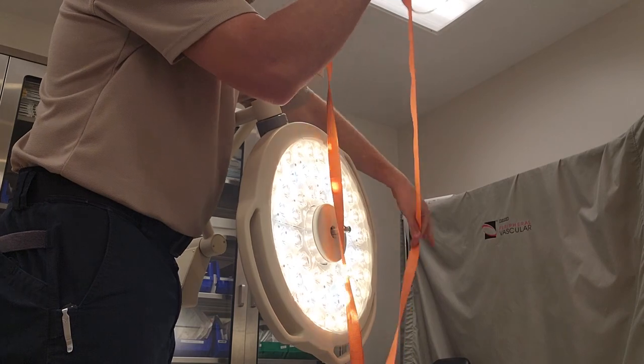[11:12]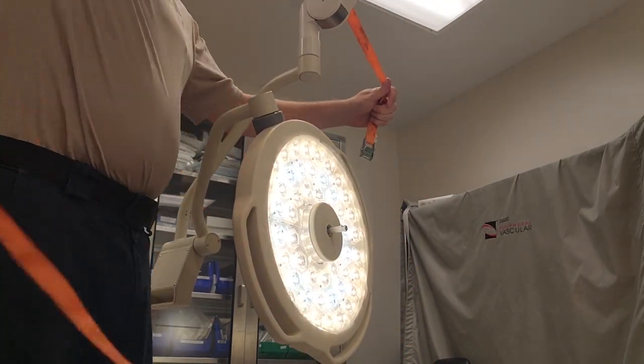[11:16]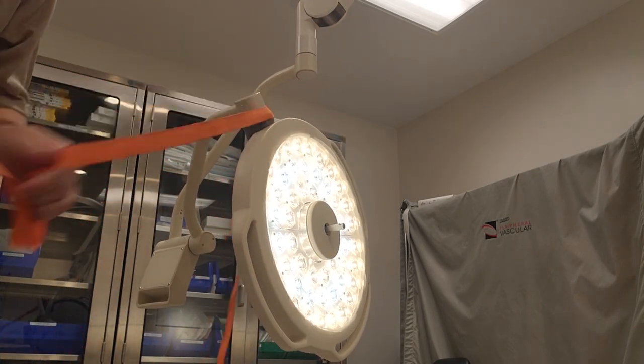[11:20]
So that's what I did. Now let me go turn the breaker back on and let's see if our new light head is functioning. Let's do it. Breaker's on. I have a control panel. All right. And at this time, let's move it around. Let's make sure that the light doesn't cut out, which would mean bad contacts up here. So now it's safe to go ahead and remove my strap. And now I have to do a range of motion test to make sure that the light doesn't shut off.
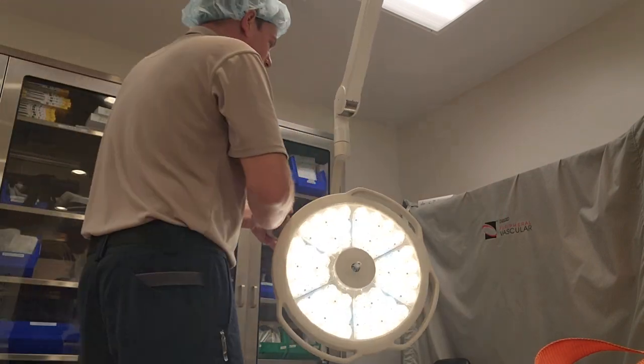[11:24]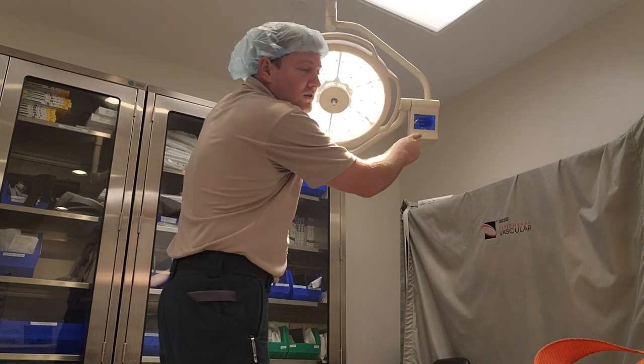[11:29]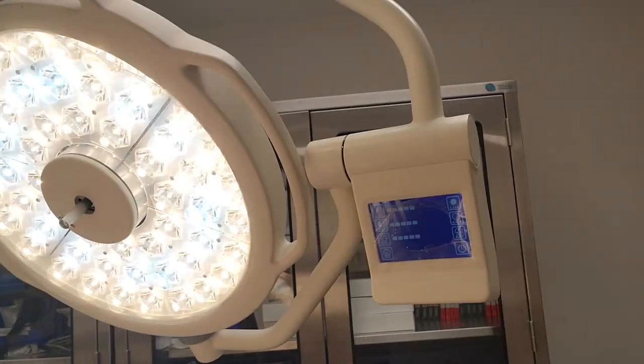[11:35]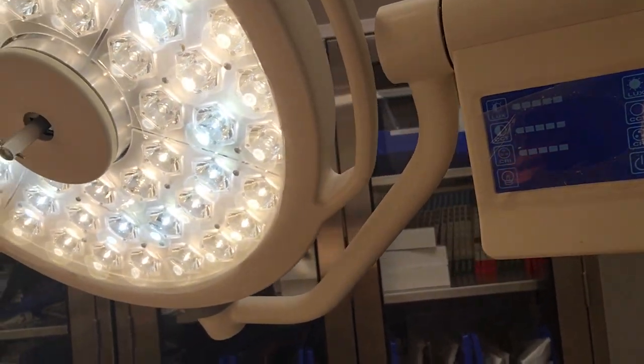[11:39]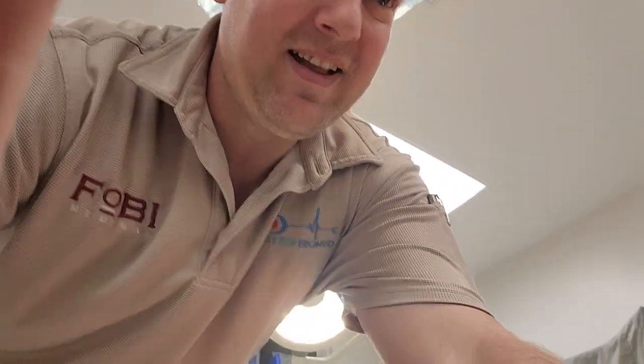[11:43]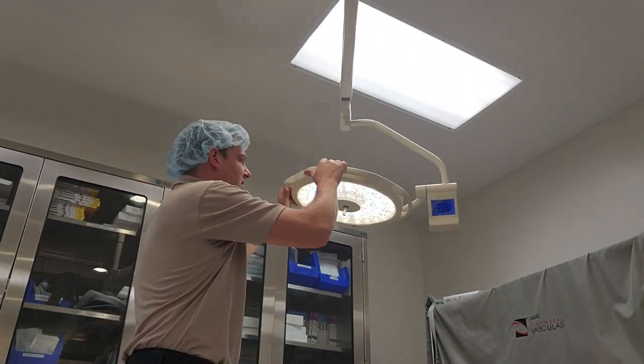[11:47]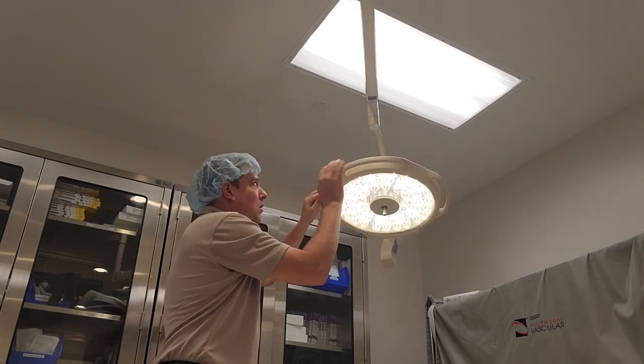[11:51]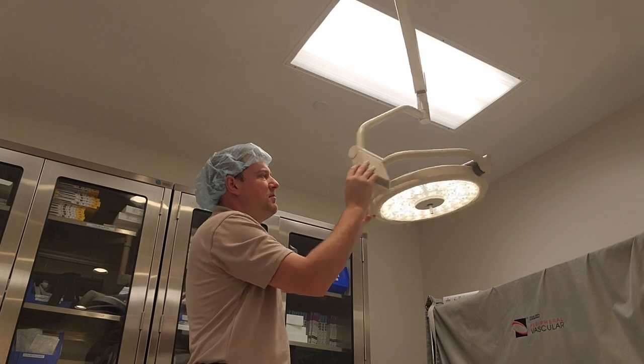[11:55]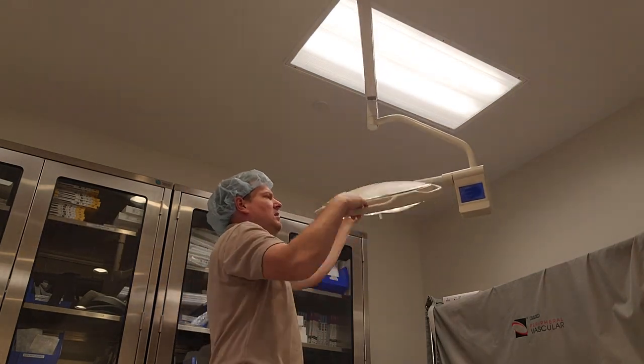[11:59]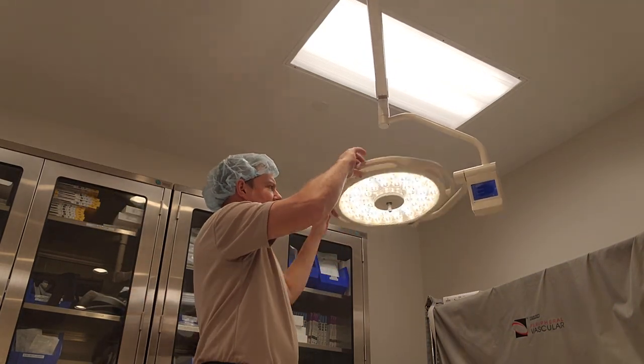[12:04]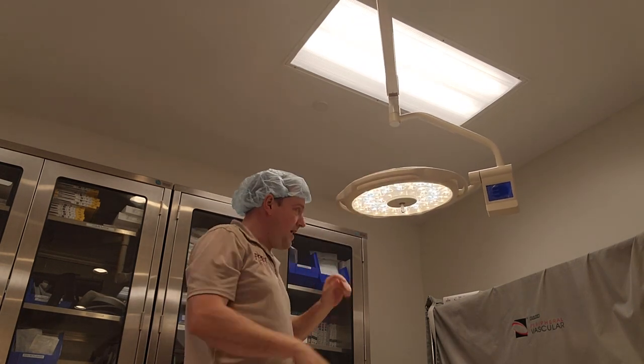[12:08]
Okay, so here we are. You can see the control panel on these DRE lights. Looks really squishy, doesn't it? See that control panel? Very cool. Alright. So, let's go ahead and set it up. This is a range of motion. Make sure that the light doesn't cut out or dim. Okay, so that's your commutator, the 360 degree motion. And we got this way, this way, and this way.
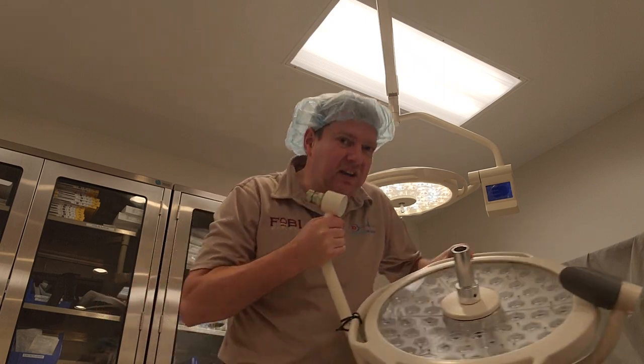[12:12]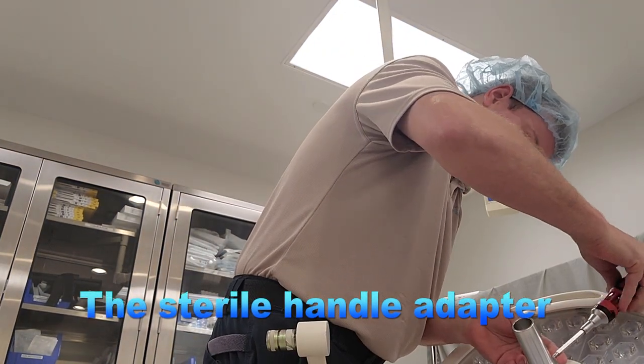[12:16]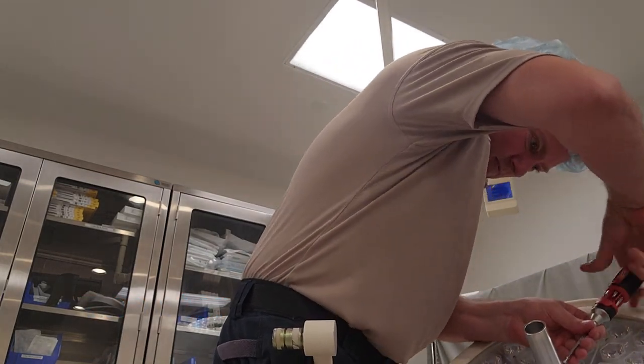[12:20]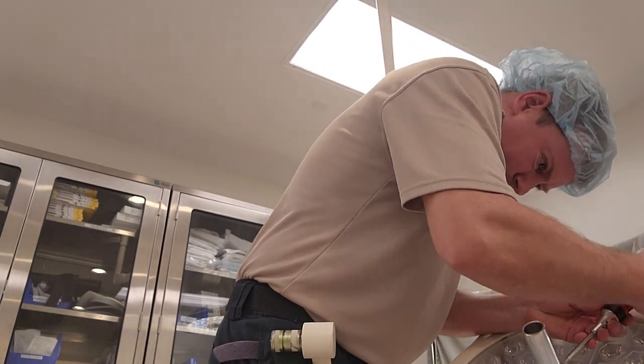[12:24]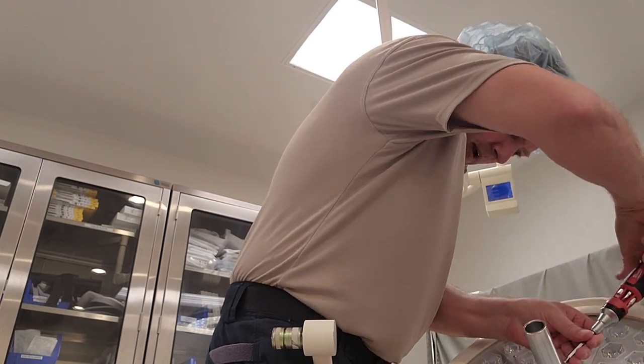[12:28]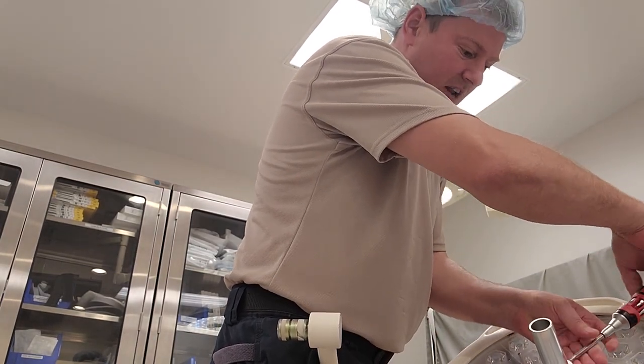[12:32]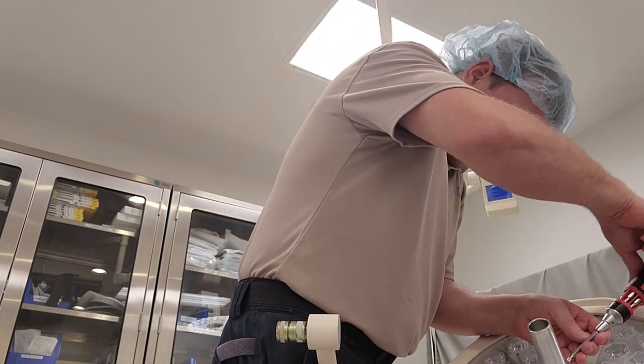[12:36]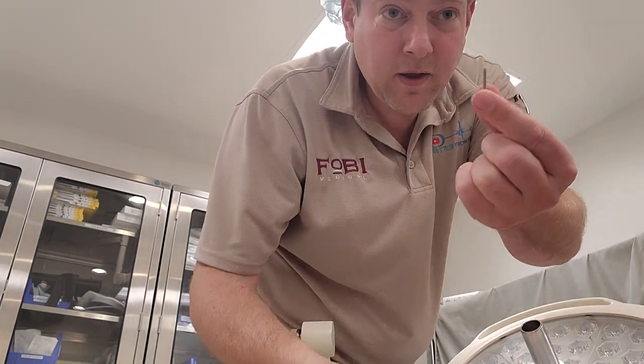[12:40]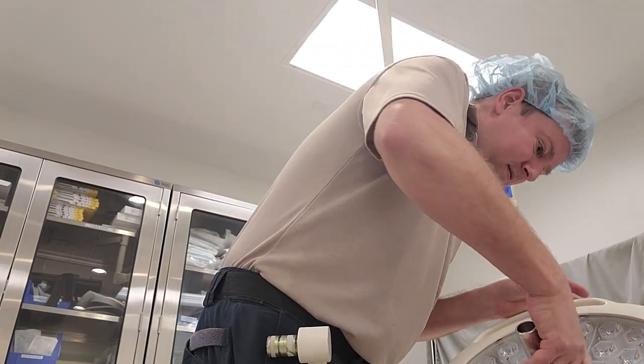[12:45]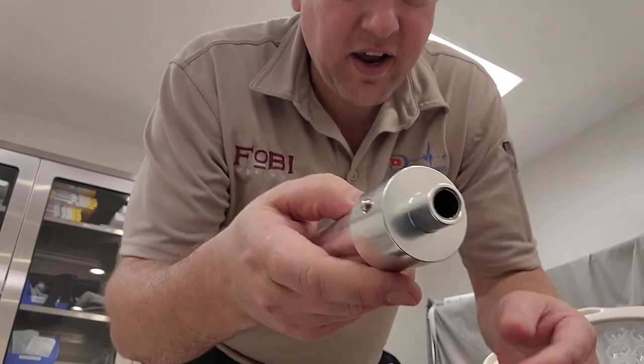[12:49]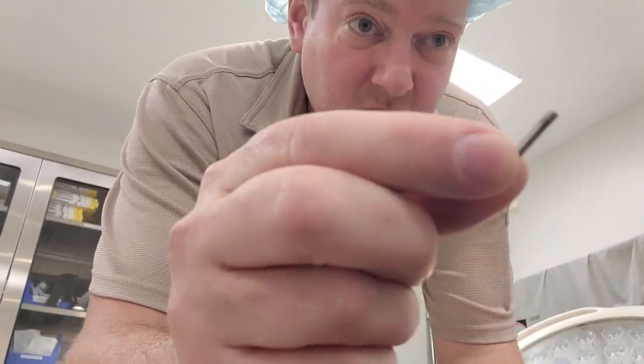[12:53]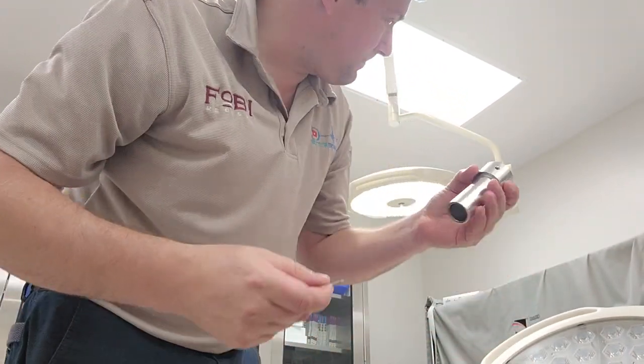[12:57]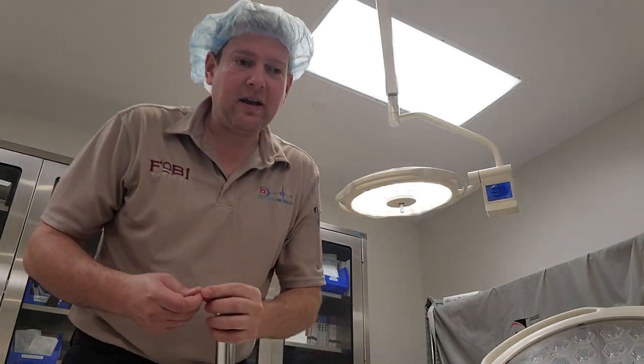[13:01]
All right. So now that we have that, one more thing that we got to change out between the light heads. Here's a Phillips screw. There you go. And this Phillips screw, I'm using a number one Milwaukee Phillips screwdriver. It's brand new and it's not wanting to match up. So I don't know what type of Phillips that is, but definitely a little screwy. Okay. So here we go. Here's your sterile handle. Cool stuff. So it looks like there's a little bit of Loctite on the end. So I'm gonna put a little bit of Loctite on it. This one's gonna get secured to the new light. And this light is good to go.